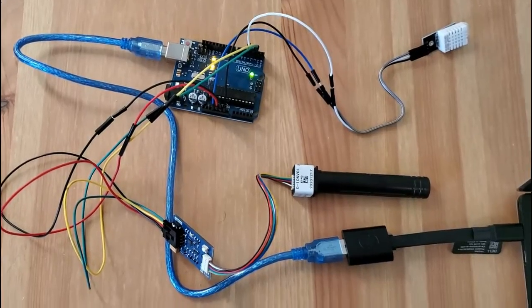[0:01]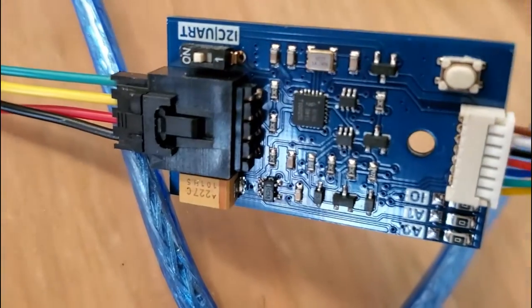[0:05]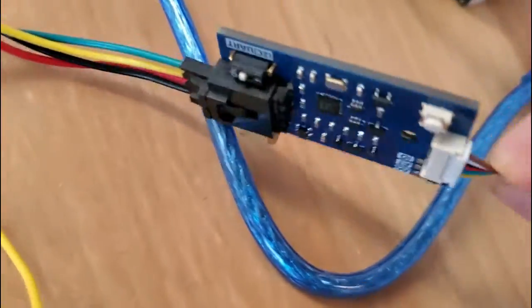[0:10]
Hey Q-Crammers, this video is the start of a bigger project to create an Arduino-based DIY CO2 incubator. It's loosely based on a project from the Pelling Lab, but simplified and updated. As usual, all useful links will be in the video description.
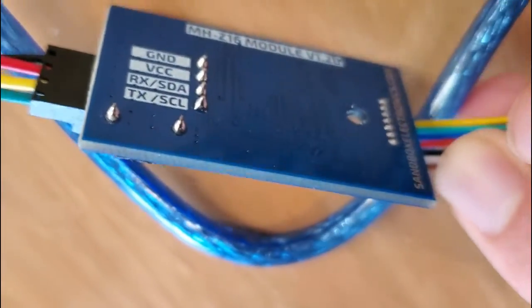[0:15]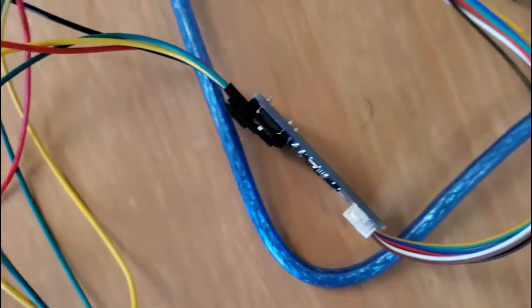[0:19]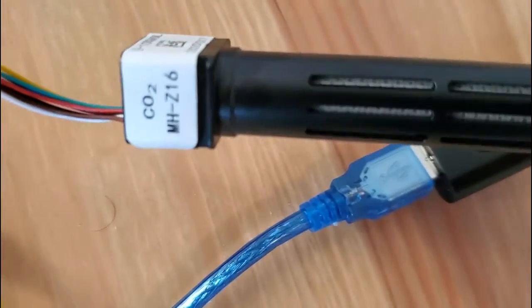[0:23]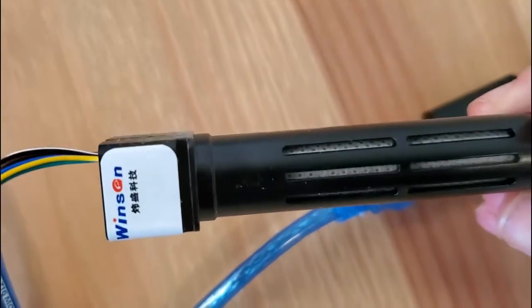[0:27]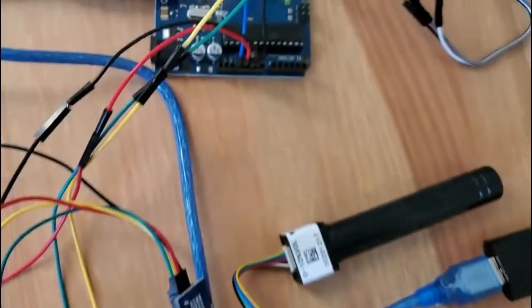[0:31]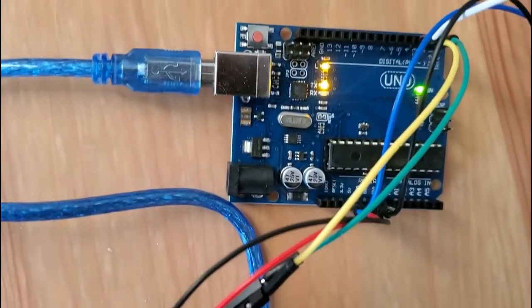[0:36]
To build the CO2 incubator, you'll need two sensors. First is the MH-Z16, which is a CO2 sensor capable of measuring concentrations of 0 to 10% CO2 in the air. I got mine from Sandbox Electronics. There aren't that many options for this range of CO2 sensor. Most of the cheap Arduino CO2 sensors available max out at around 10,000 ppm, which is only 1% CO2.
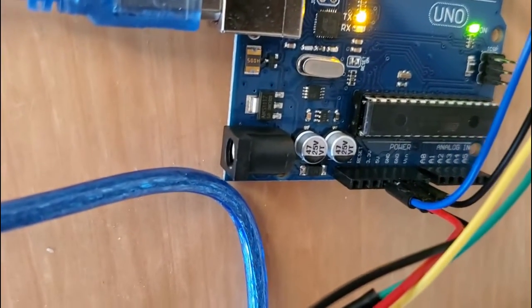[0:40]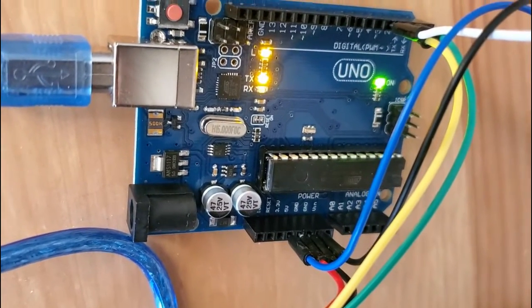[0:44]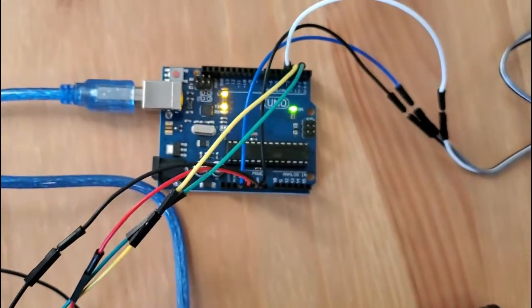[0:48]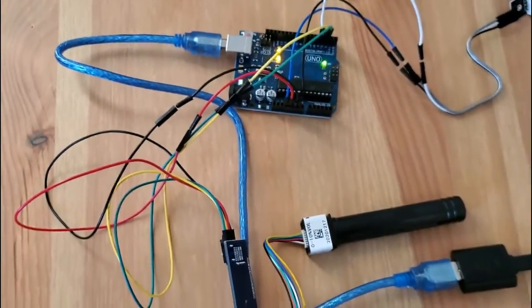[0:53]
Oftentimes, they don't even measure CO2 directly and actually measure the hydrogen in the air as a surrogate measurement of CO2 from respiration. The only other sensor I was able to find with the appropriate specs was from CO2 meter. This was the sensor used in the Pelling Lab project. The reason I chose the Sandbox sensor is that it was slightly cheaper, and I wanted to experiment with a different sensor that hadn't been documented in this application before.
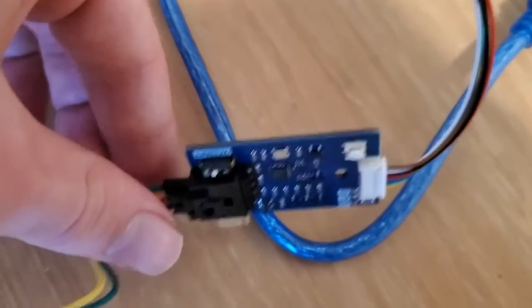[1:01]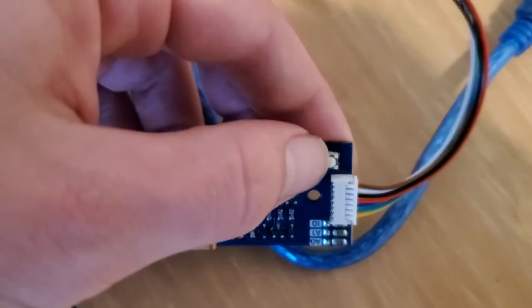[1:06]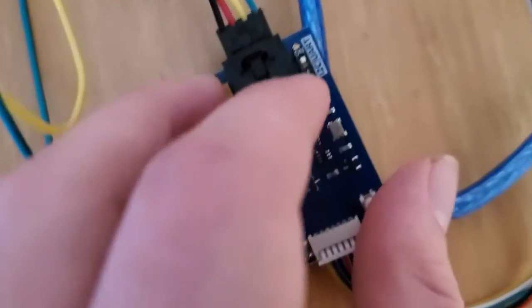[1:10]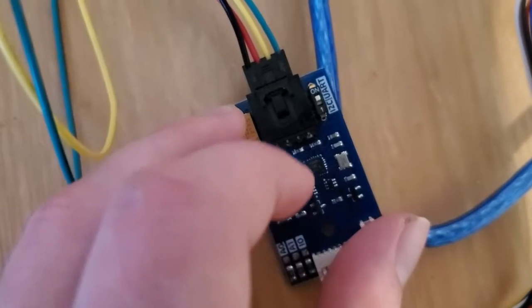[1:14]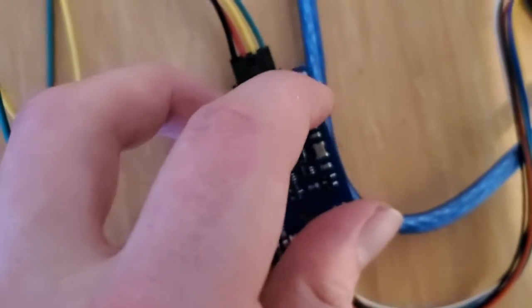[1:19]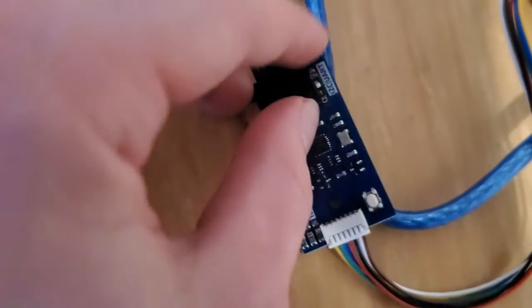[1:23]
There are a couple important things to note about this particular sensor. First is the physical reset button you can find on the adapter board that comes with the sensor itself. This board also has a physical switch to change from UART to I2C wiring when connecting the Arduino. In this case, I've been using the UART setup, but I also tested the I2C setup, and it also seemed to work. You'll just have to make sure to change the wiring to the Arduino as well.
And speaking of wiring, for the UART setup, I have the black wire going to ground, the red wire going to 5V, the green wire going to pin 2, and the yellow wire going to pin 3. If you were using the I2C setup, the yellow wire would go to the A4 pin, and the green wire would go to the A5 pin.
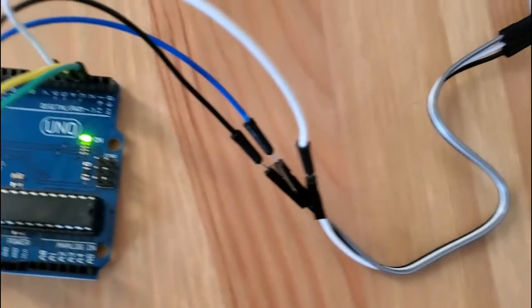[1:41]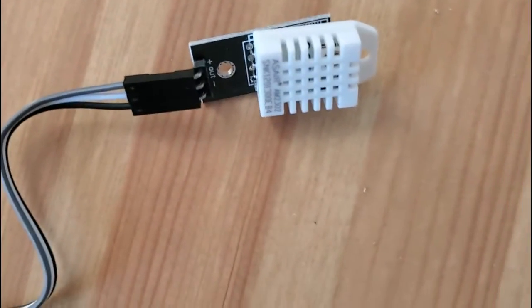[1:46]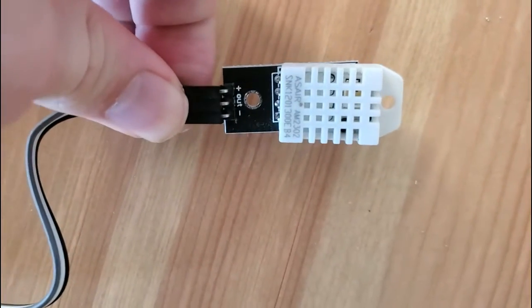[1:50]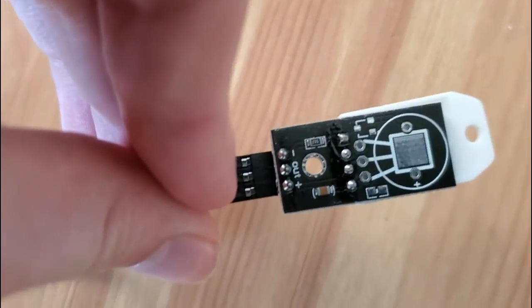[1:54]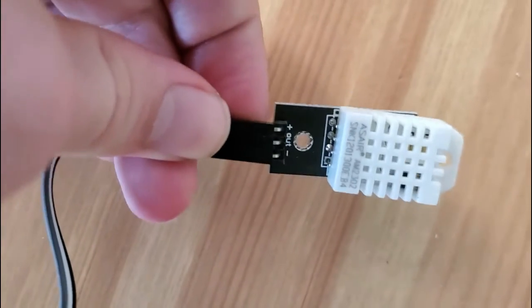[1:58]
The second sensor is the DHT22 temperature and humidity sensor. The sensor is able to measure temperatures from -40°C to 80°C and humidity from 0 to 100%. The temperature accuracy is plus or minus 0.5°C, and the humidity has an accuracy within 2 to 5%.
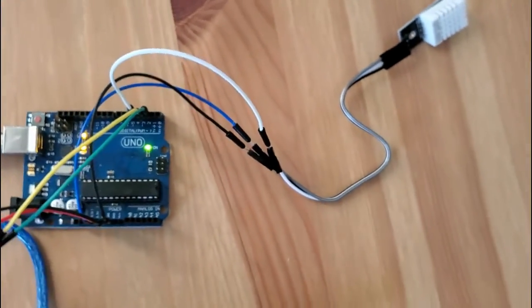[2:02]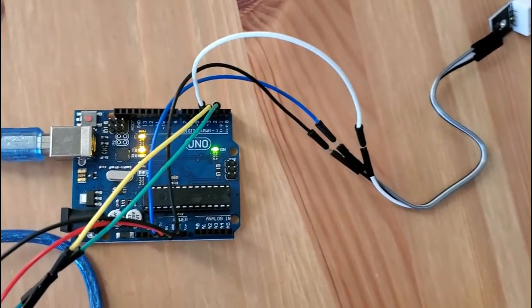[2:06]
Initially, I was going to use a single function temperature sensor with higher temperature accuracy, but I wanted to add the extra humidity feature, and this seemed like the simplest implementation. For the wiring, the black wire goes to ground, the white wire goes to pin 4, and the gray wire goes to 3.3V, since the 5V pin is used by the CO2 sensor.
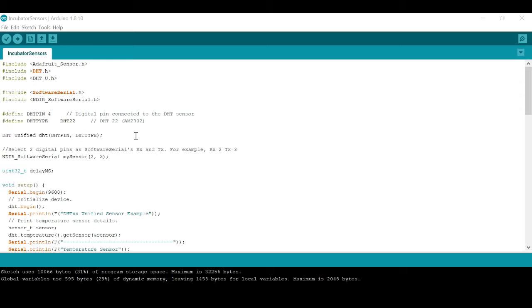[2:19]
Luckily, you don't need to have much programming experience to get the Arduino and sensors working. Both the CO2 and temperature sensor have open source code examples to get started. You'll have to install some libraries as well, but that's fairly straightforward.
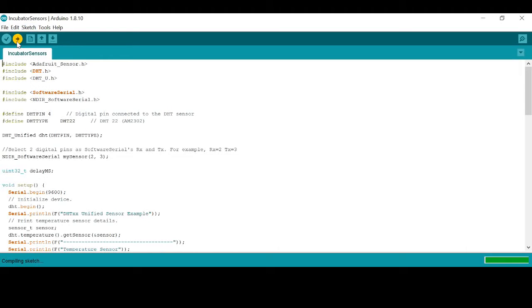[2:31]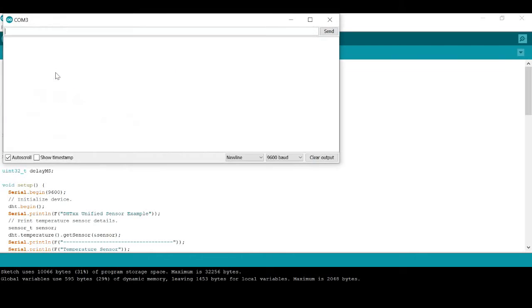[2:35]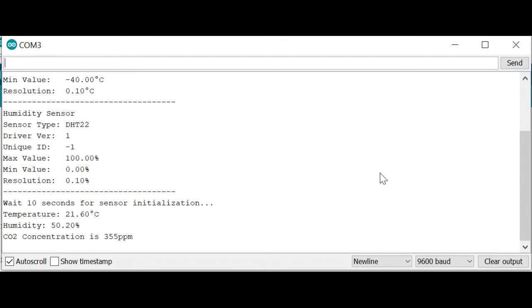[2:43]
What I'm showing here is basically just a mashup of the two example codes so that I can read both sensors simultaneously. And you can see the sensors respond when I blow on them one after the other. First, the CO2 ppm goes up significantly, then the humidity also shows a significant jump, along with a more modest temperature increase.
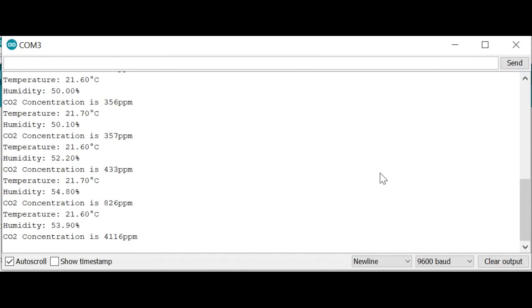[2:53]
So now that I seem to have the sensors working for the DIY incubator, I'll start working on the next step, which is having the Arduino output a response to control the temperature and CO2 concentration based on the sensor readings.